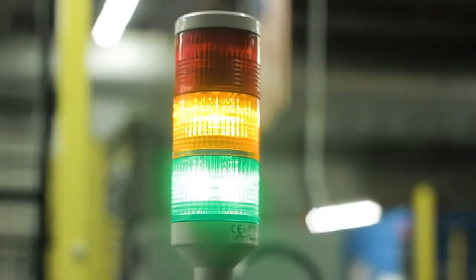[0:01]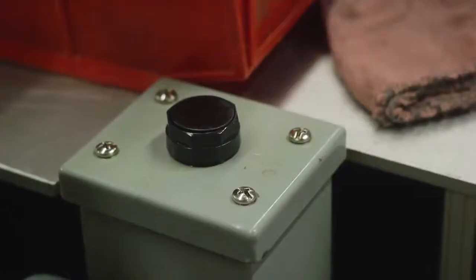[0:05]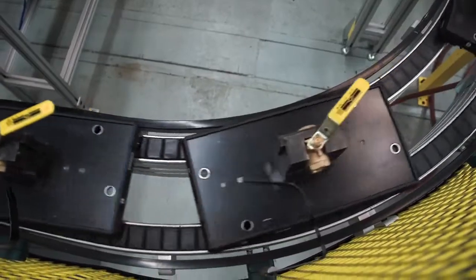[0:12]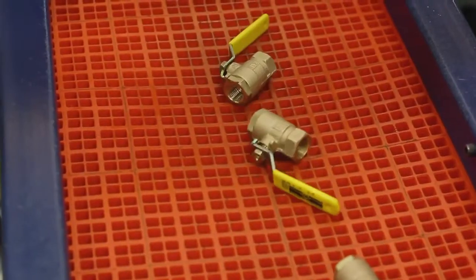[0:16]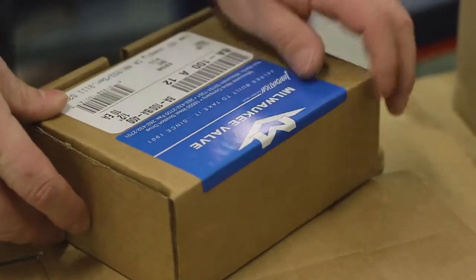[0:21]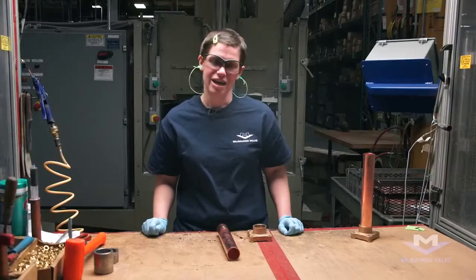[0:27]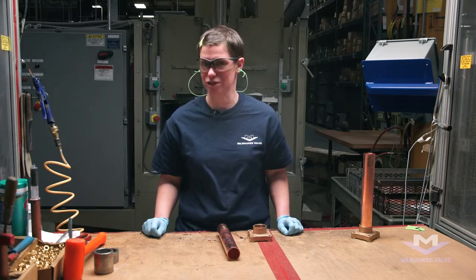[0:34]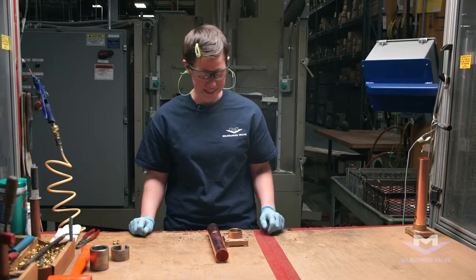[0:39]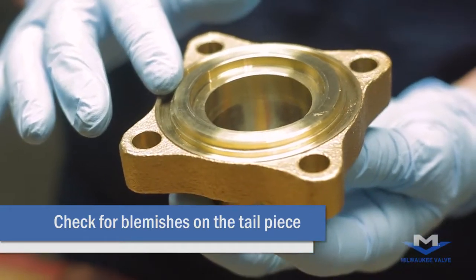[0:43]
Process in preparation for the clean room application. Step one in the brazing process is we check our tailpiece. We check to make sure that it's free of blemishes and or casting surface issues.
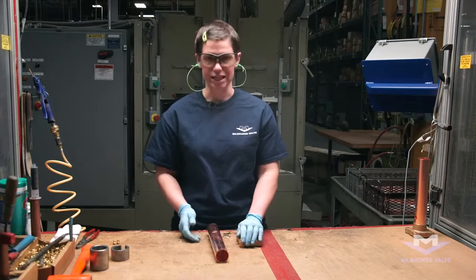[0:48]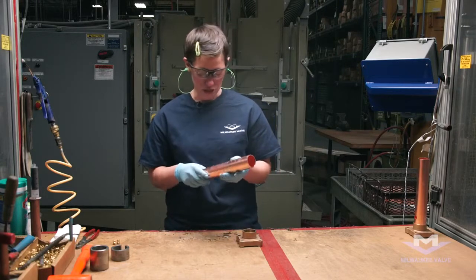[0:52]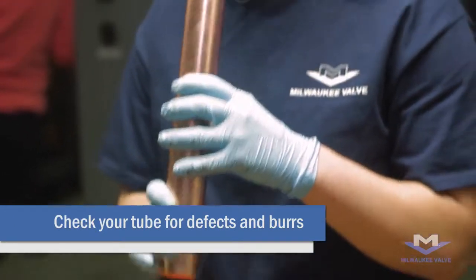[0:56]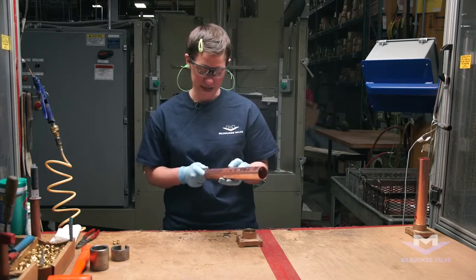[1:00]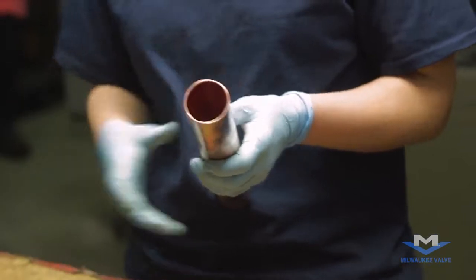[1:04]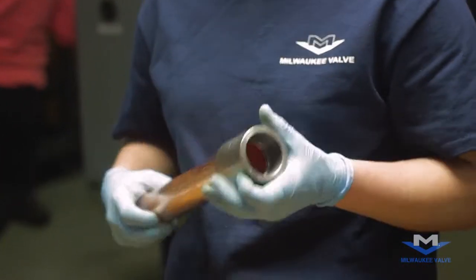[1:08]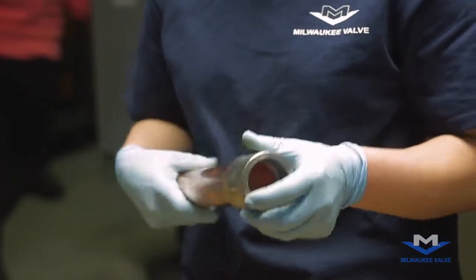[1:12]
After we deem that the tailpiece is acceptable, we move on to our tube. We check our tube over to make sure it is free of defect. We also check for burrs. If there is a burr, we remove it with our round file, especially where there is a port. Along with this process, we also gauge our tube to make sure that it meets our specs and that we can continue in the production process with it.
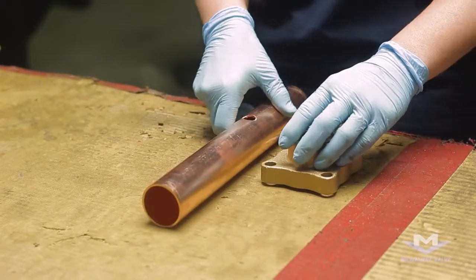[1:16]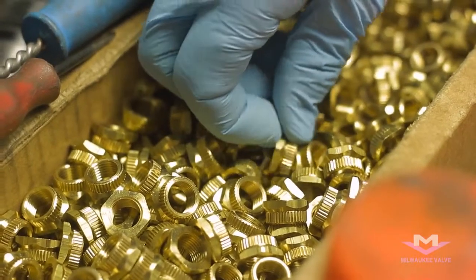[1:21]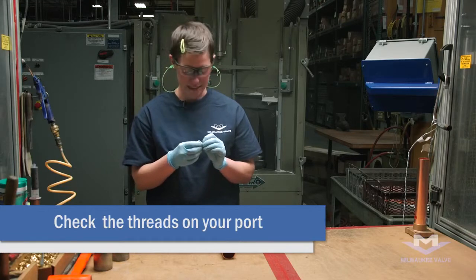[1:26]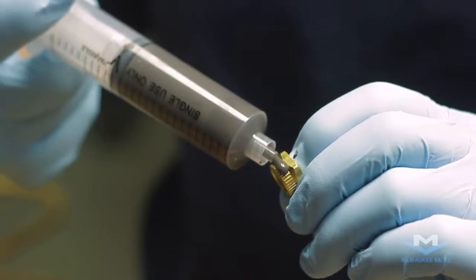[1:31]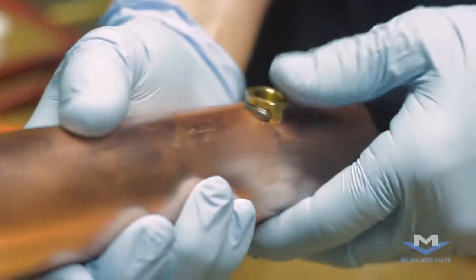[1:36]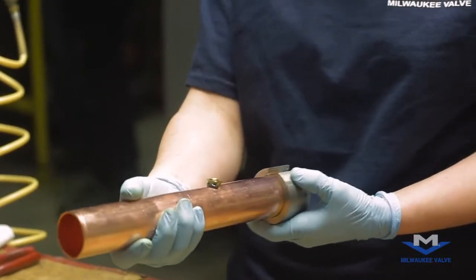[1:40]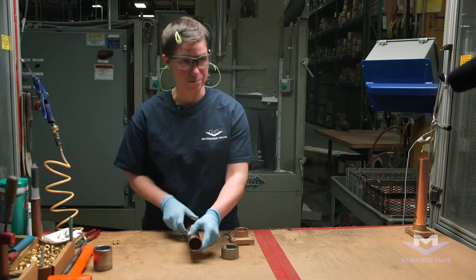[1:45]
After your tube is free of burrs and you have deemed the tailpiece acceptable, we do apply the port application. With the port, we check that the threads are acceptable and that they are not damaged. We take our brazing paste, apply it to the outer skirt of the threads, put it in the tube, make sure that the port is properly aligned, and then we can permanently affix the port to the tube.
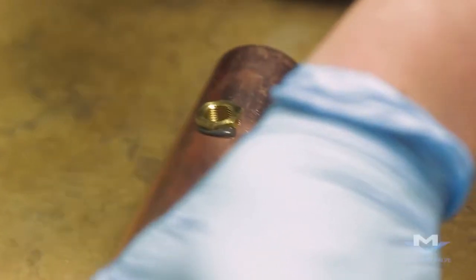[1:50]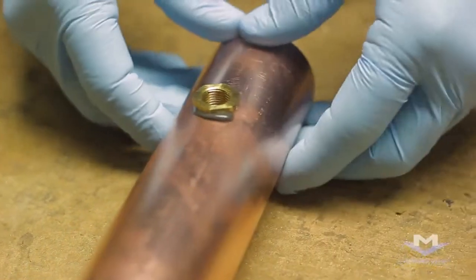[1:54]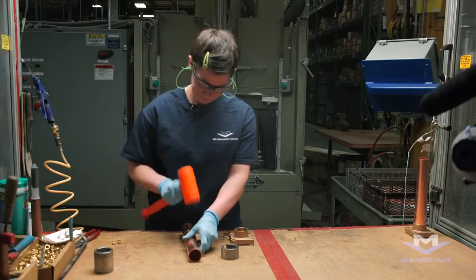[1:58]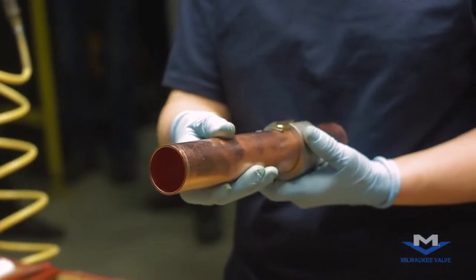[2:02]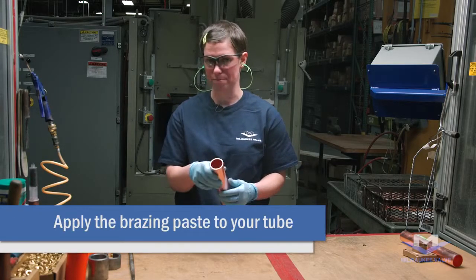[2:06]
We give it a few taps to make sure that the port is secured in the body and that the stem of the port is inside the tube. And also check for realignment at that time. After you've applied the port and you've checked for alignment, now we apply the paste to the tube.
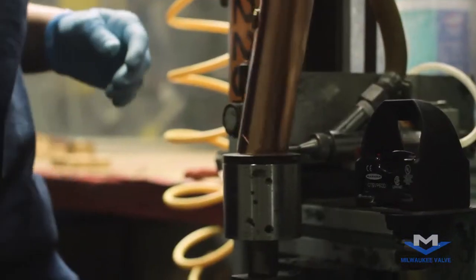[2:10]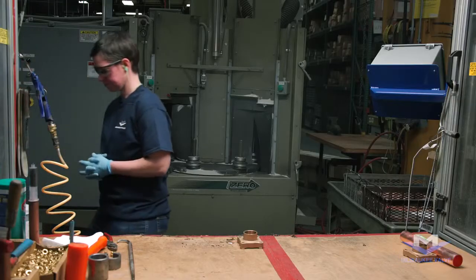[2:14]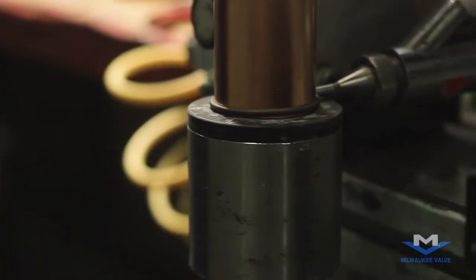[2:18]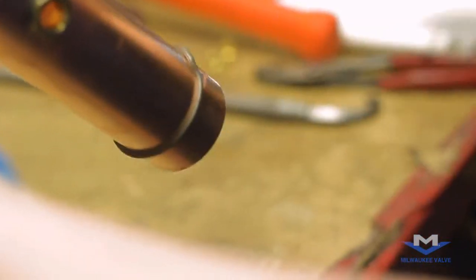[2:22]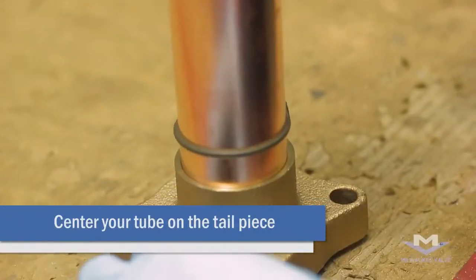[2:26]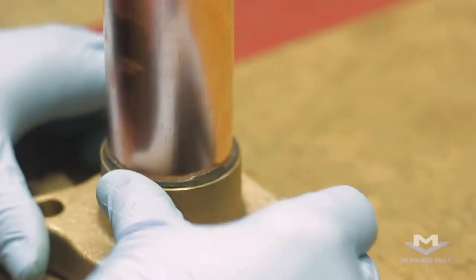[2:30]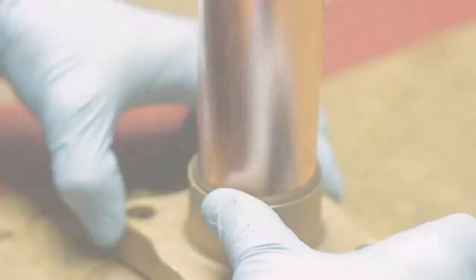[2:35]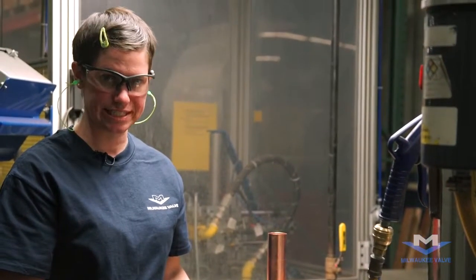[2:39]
To close the circle before applying to the tube, we use the tip of our fingertip. We again check for alignment to make sure that's directly in the center of the tailpiece, and we wipe off the extra. With the brazing paste affixed, we are ready to put it into our brazing station.
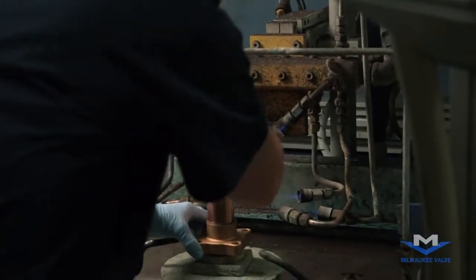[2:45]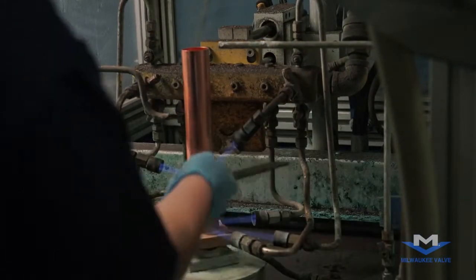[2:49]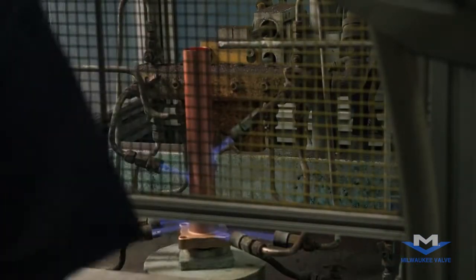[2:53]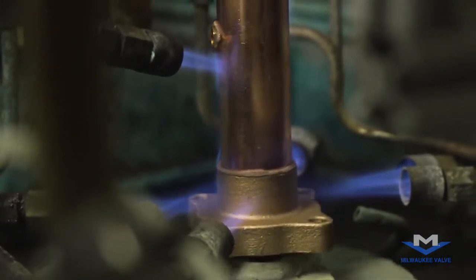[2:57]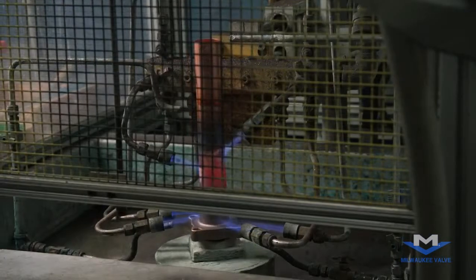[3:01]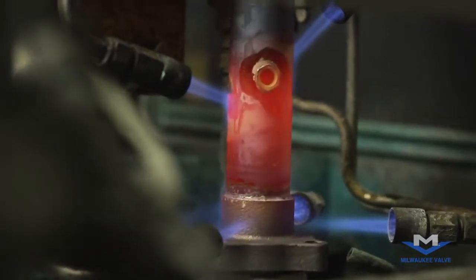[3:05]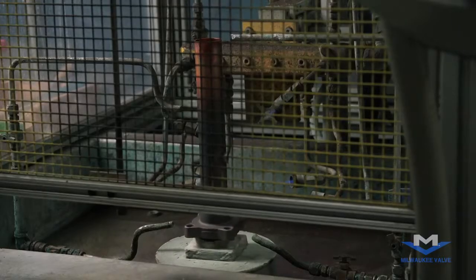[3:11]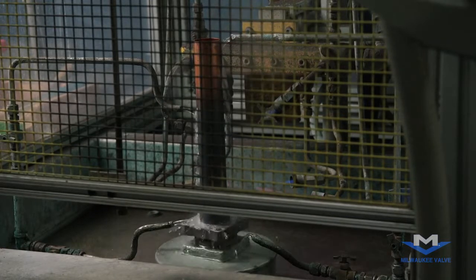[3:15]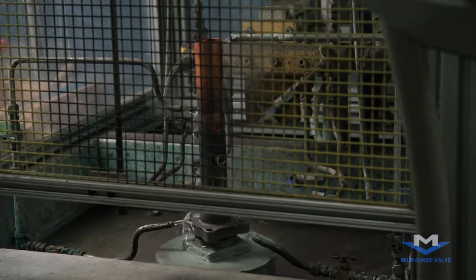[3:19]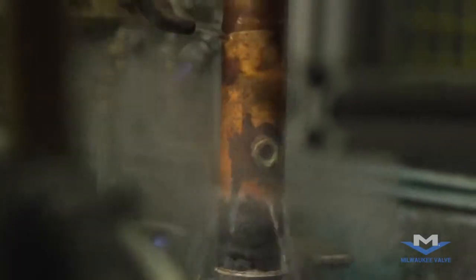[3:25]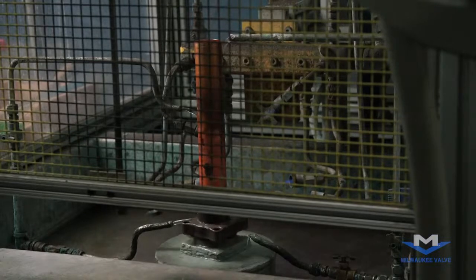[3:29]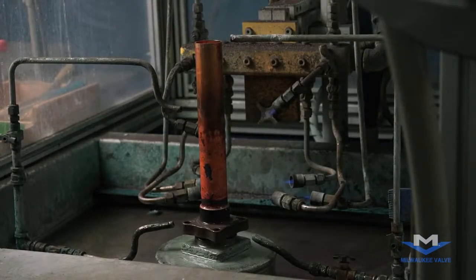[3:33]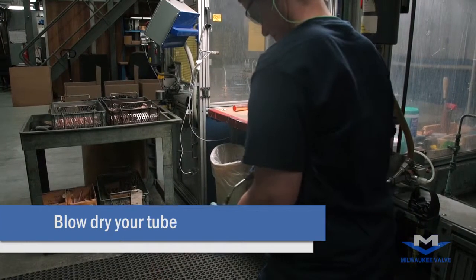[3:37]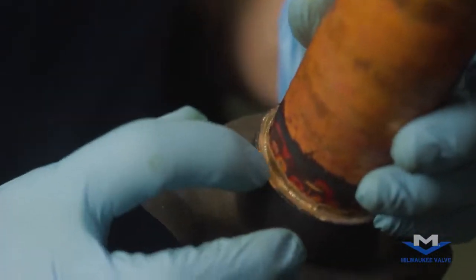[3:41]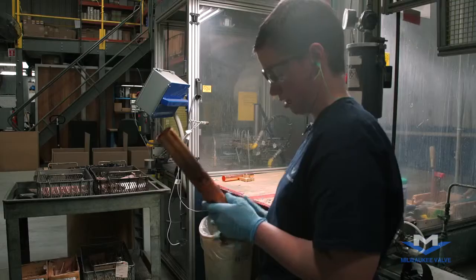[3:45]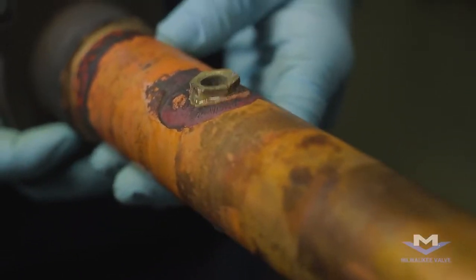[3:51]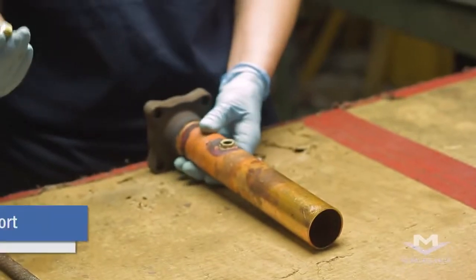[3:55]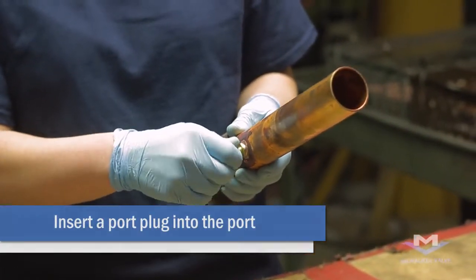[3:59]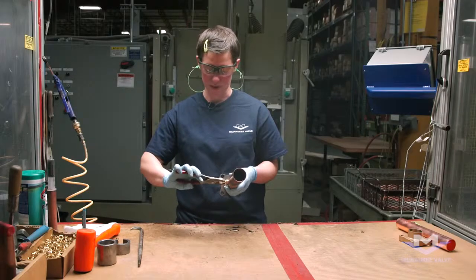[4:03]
After blowing the tube dry, we check for complete coverage and that there aren't holes in the brazing paste that we applied earlier. And we also look at our port to make sure that there aren't holes in our port. Now that the tube is dry, the next process is to protect the port with a port plug. This protects the tiny threads inside the port before you put it in the blaster.
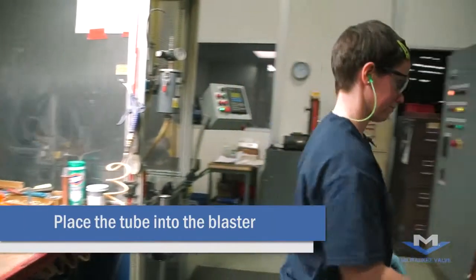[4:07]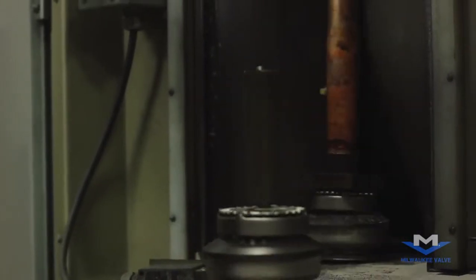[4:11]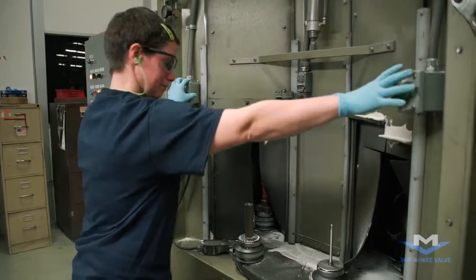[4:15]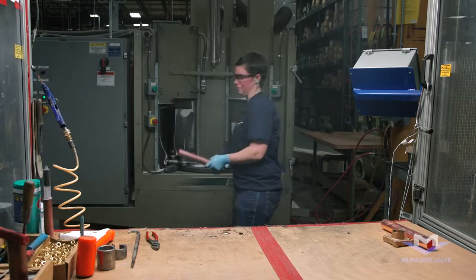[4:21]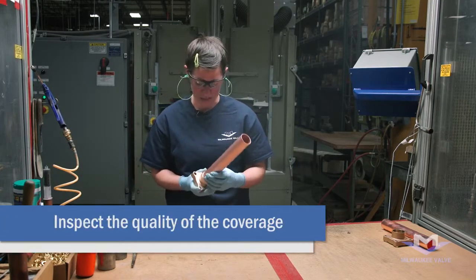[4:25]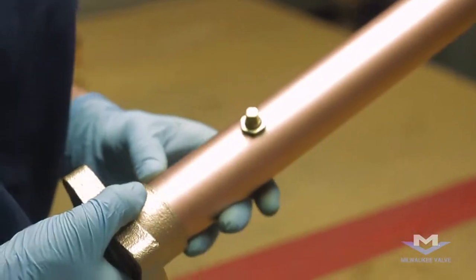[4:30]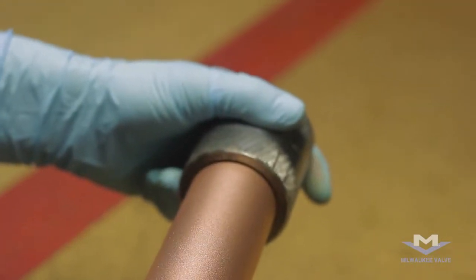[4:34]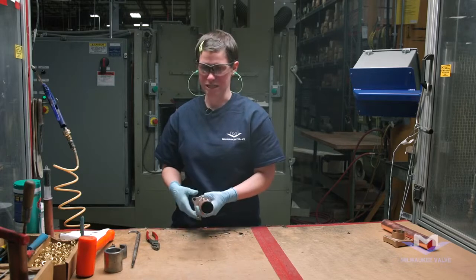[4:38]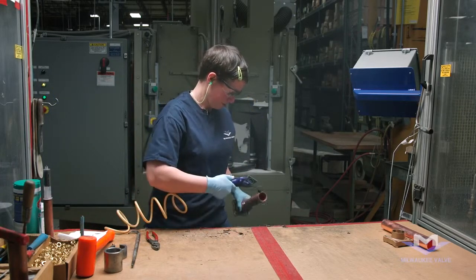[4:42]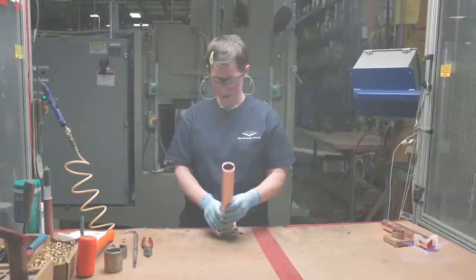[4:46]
Once we remove the tailpiece, we take it back over to the table. We inspect for the quality of the coverage. And we also gauge the tailpiece one last time to make sure that it retained its roundness and that it retained its size. At this point, we give it one blow with the air hose to remove extra blasting material. And now you're ready for the clean room application.
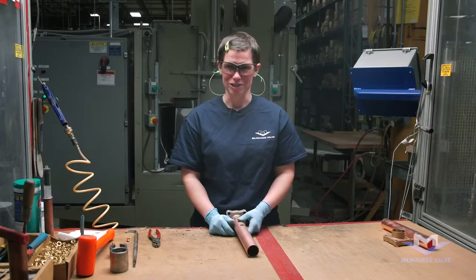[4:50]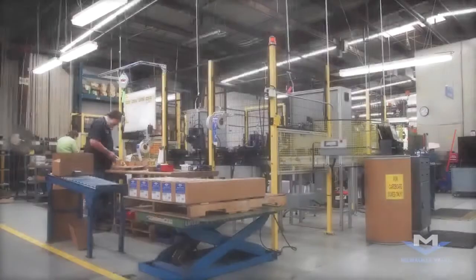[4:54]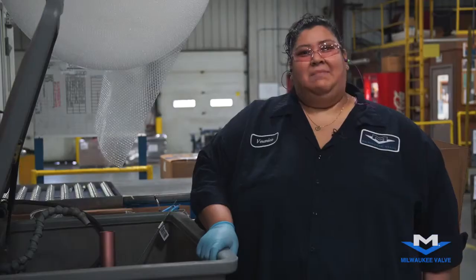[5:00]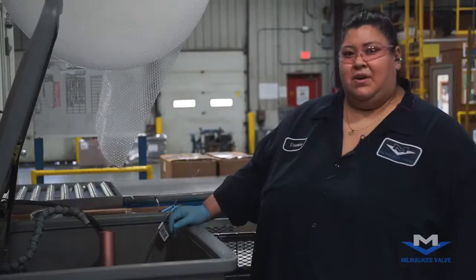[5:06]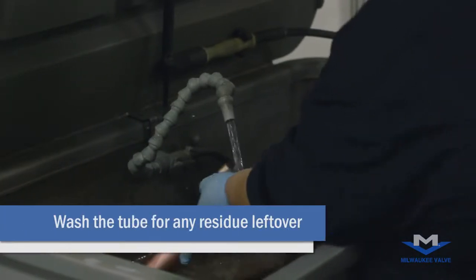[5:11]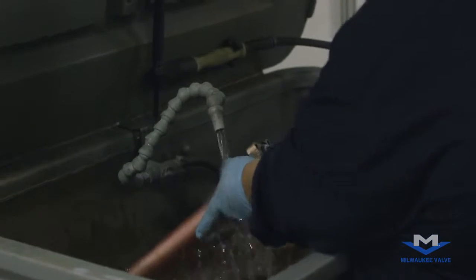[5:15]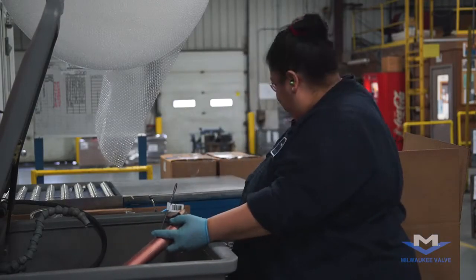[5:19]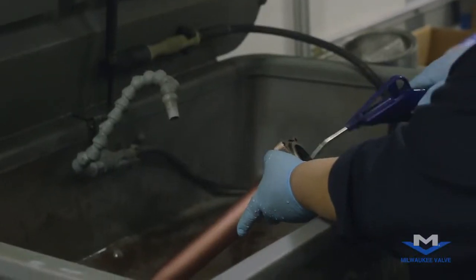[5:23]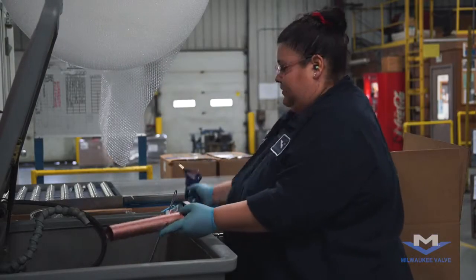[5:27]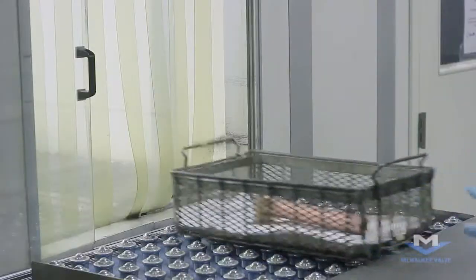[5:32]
I'm here to show you the process for the clean room. Before we start, we wash the tubes for any residue from the blasting and brazing. After you do the brushing, you blow it off. You put it in the basket and take it to the clean room through the window.
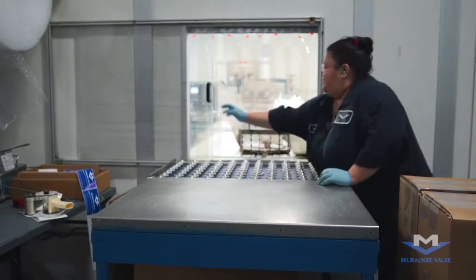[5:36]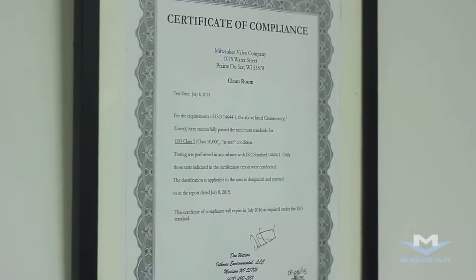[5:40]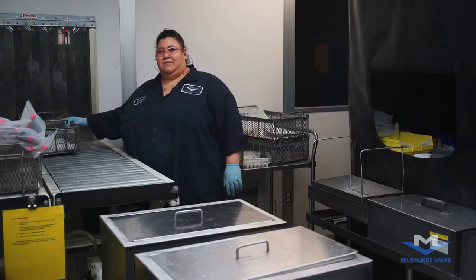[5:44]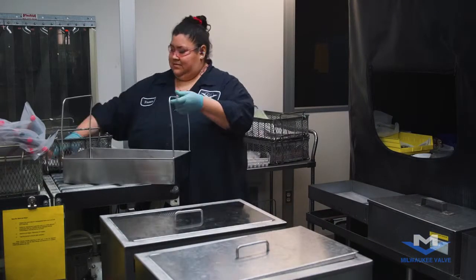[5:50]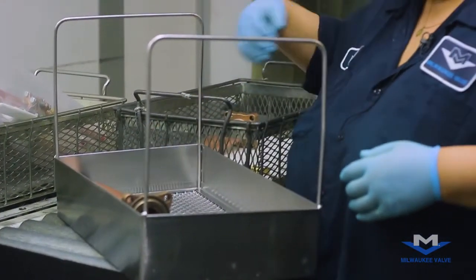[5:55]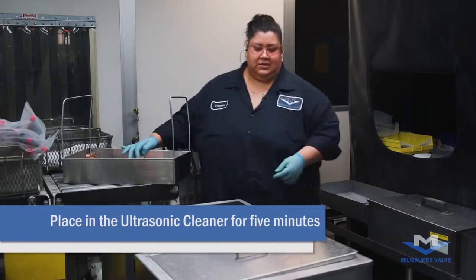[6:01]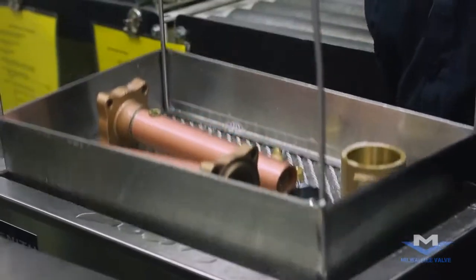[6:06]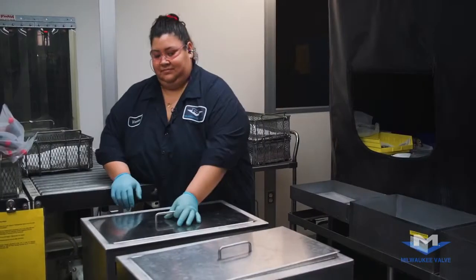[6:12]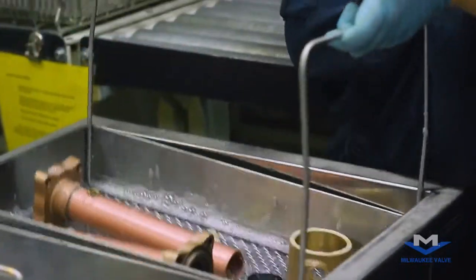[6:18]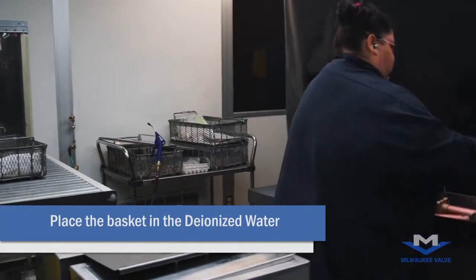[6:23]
Once it's in the clean room, the first thing to do is put it in a basket: the body, the ball, the tubes, the stem and the gland, and we put it in the ultrasonic cleaner. And this is going to be for 5 minutes. Once the 5 minutes are done, you take it out, drain all the water out, and put it in the deionized water.
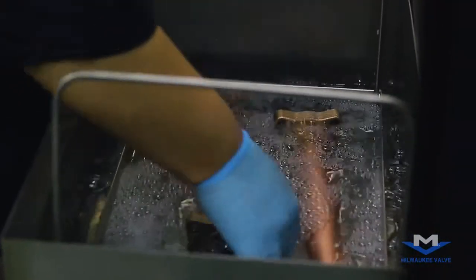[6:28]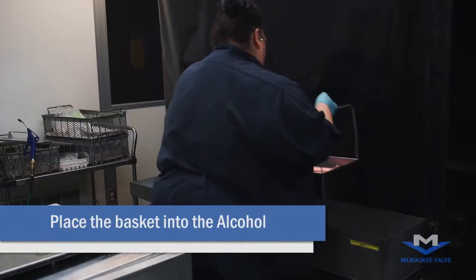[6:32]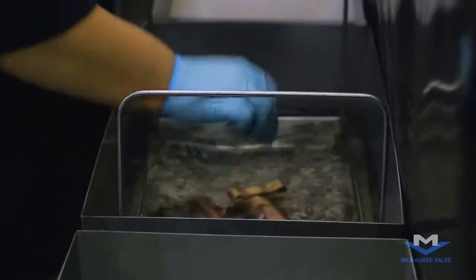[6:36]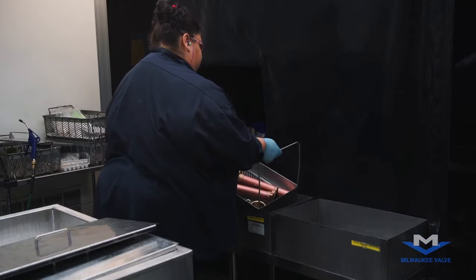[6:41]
Drain the water, then put it into the alcohol. Then when it's out of the alcohol, we blow it out.
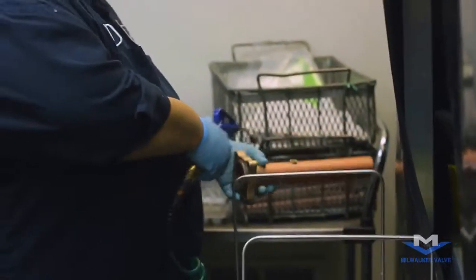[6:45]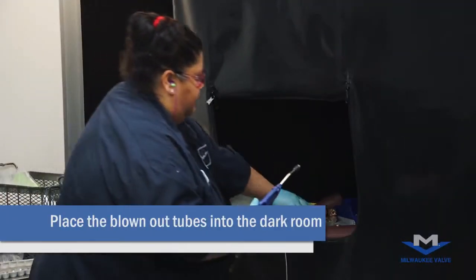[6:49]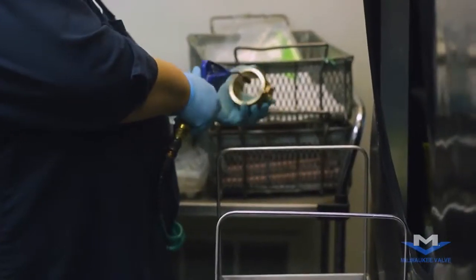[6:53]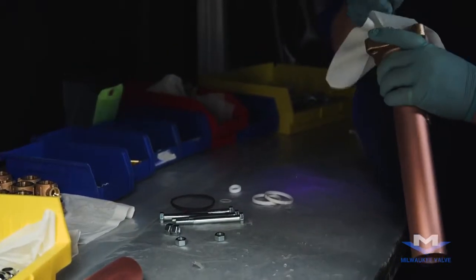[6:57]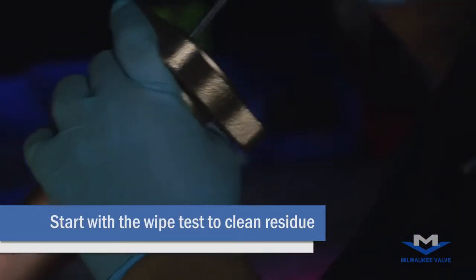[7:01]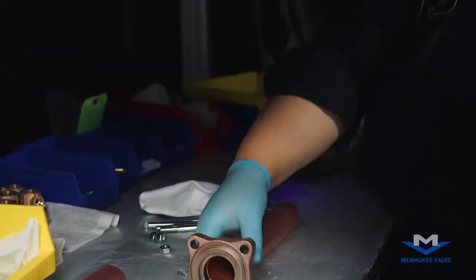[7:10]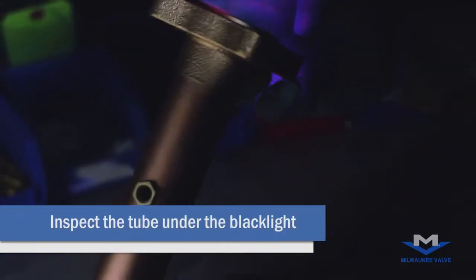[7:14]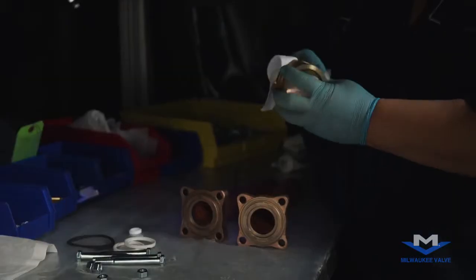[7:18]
The first thing you're doing here in the black light room is the wipe test, which is inside the tube. Make sure there's no residue that was left. Take it out. Then you take it under the black light, watching for any debris on there. Then you do the wipe test on the body, and then you do it under the black light.
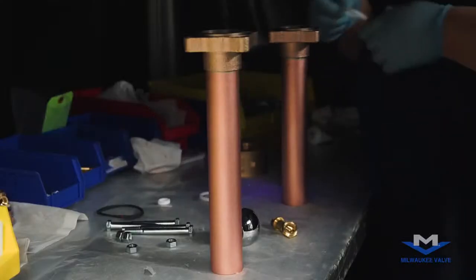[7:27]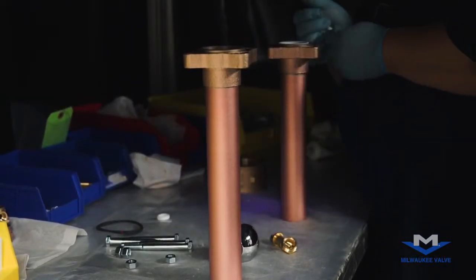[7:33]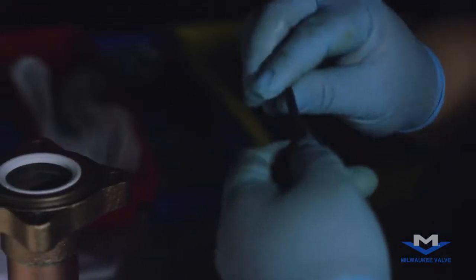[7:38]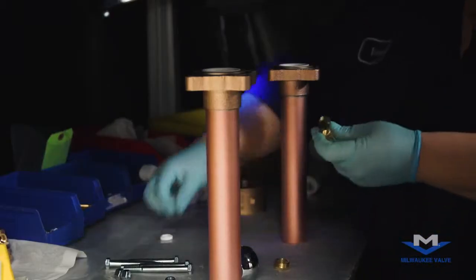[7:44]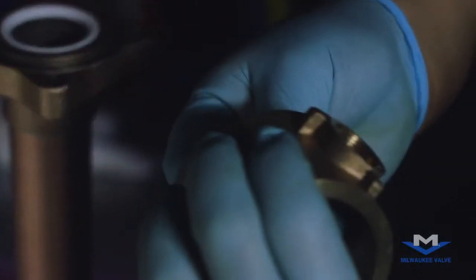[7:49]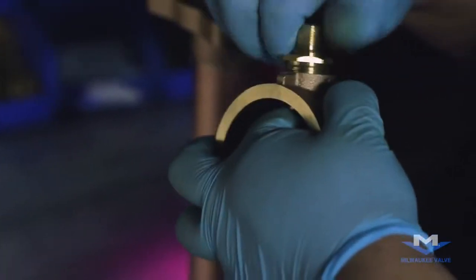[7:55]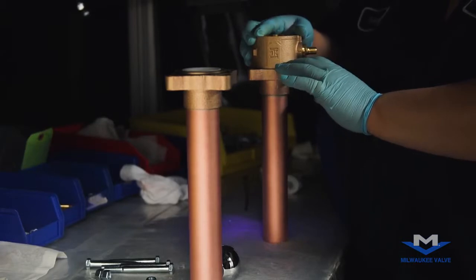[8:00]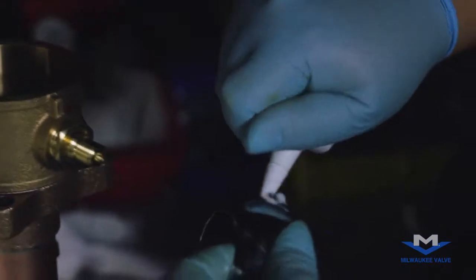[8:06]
And here are the seals. You put a little bit of Krytox on the O-rings so they stay on the tailpieces. There's the washer and the stem. They go into the body. You put the packing and the gland in there. Then you put the body on there and then the ball. You put a little bit of Krytox on the ball.
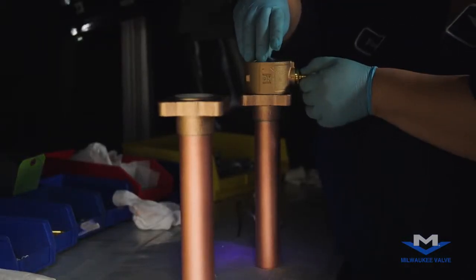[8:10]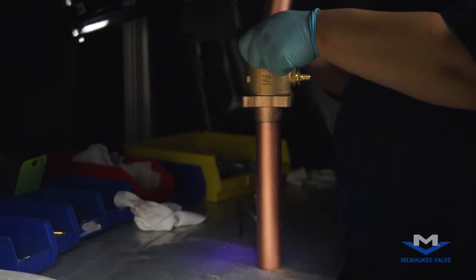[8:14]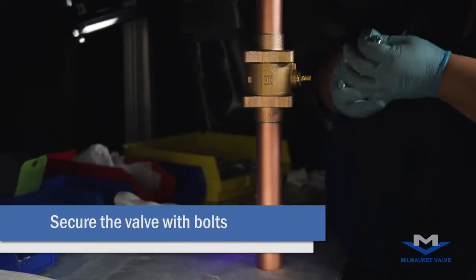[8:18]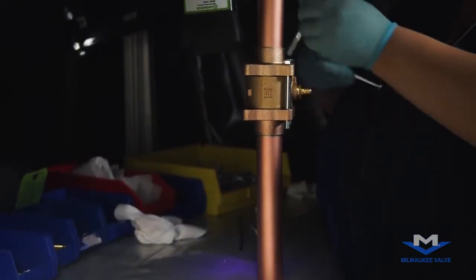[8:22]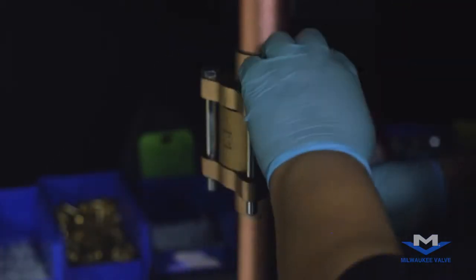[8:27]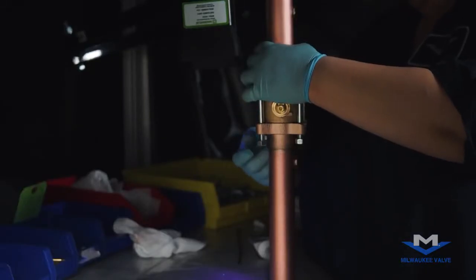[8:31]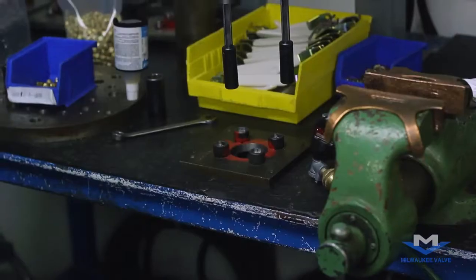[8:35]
And you put the other tube on the top. And then you're ready to put the bolts on there. It's 4 bolts, and then the nuts. Now it's ready to be torqued, the gland, the handle.
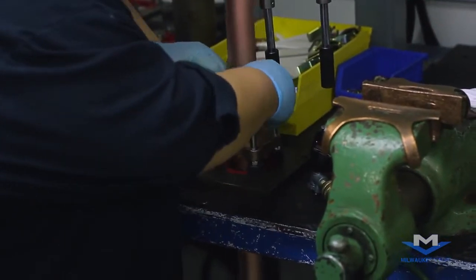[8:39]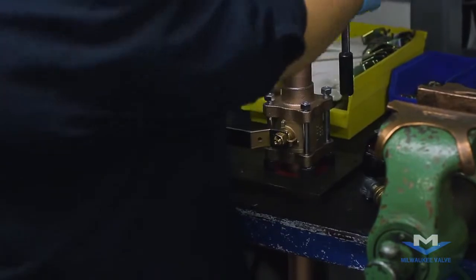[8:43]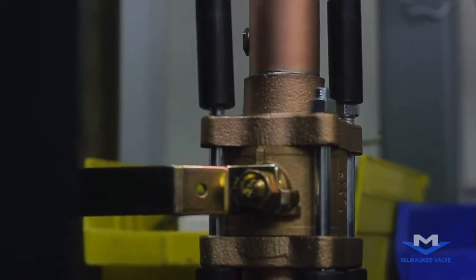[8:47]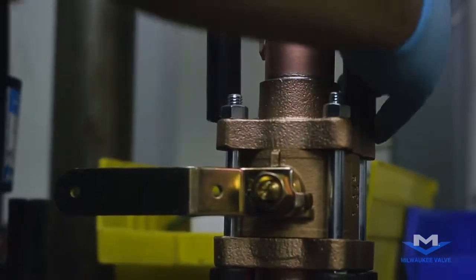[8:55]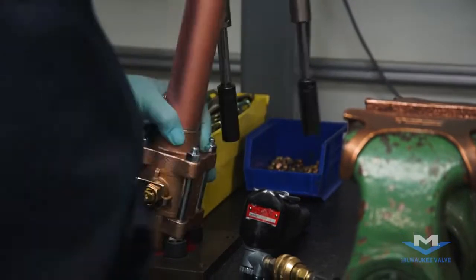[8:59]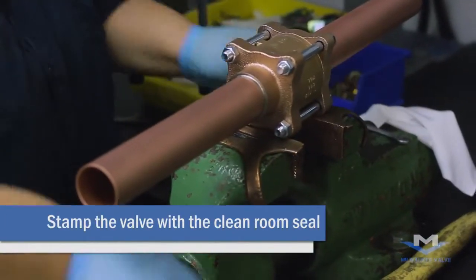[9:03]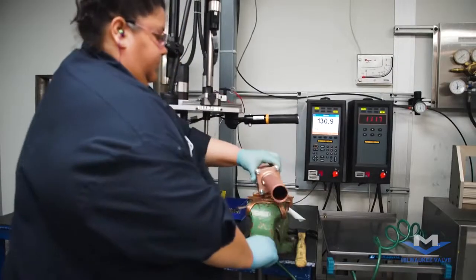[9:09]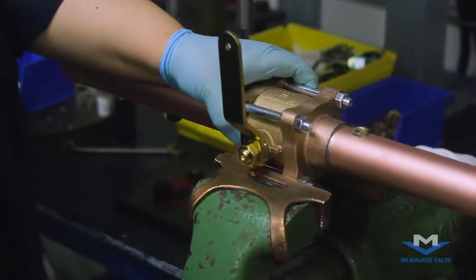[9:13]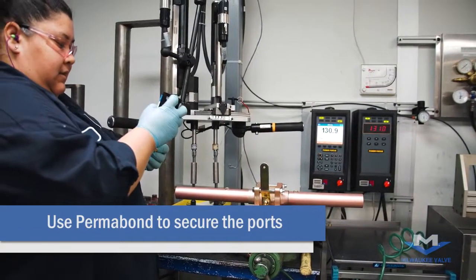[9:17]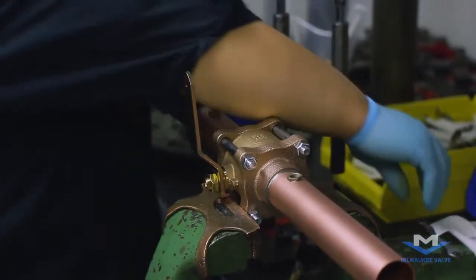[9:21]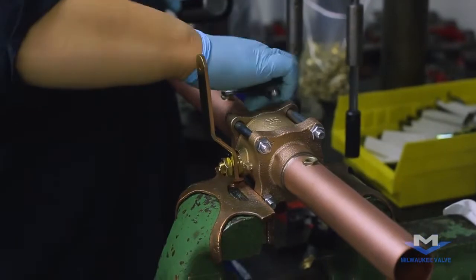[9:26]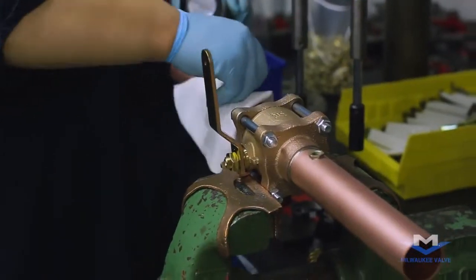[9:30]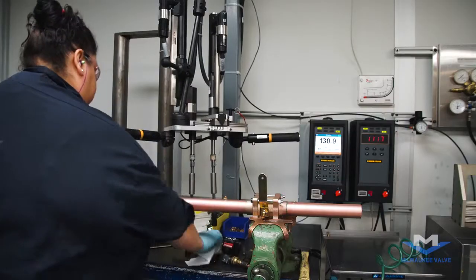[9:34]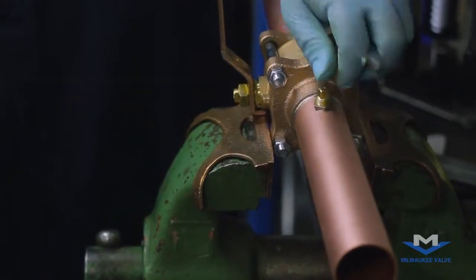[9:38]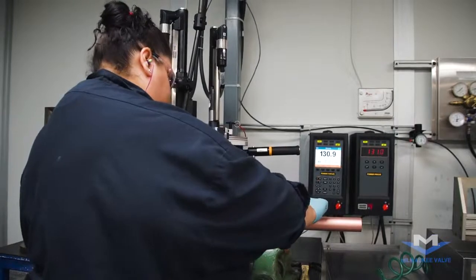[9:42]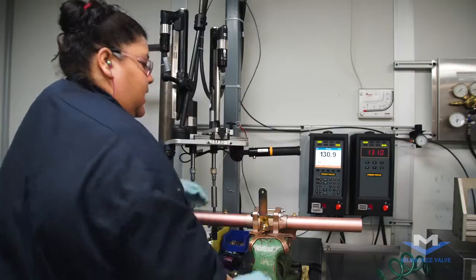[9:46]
Then you take it out of here. And you stamp it, which says the clean room. And you're going to put the plugs on the ports. And you put some Permabond on the ports. Then you torque it. And you wipe off any that didn't go down. And you do the other one. Now it's ready to be tested.
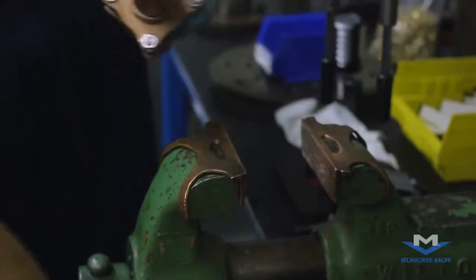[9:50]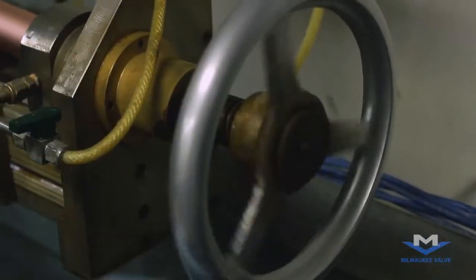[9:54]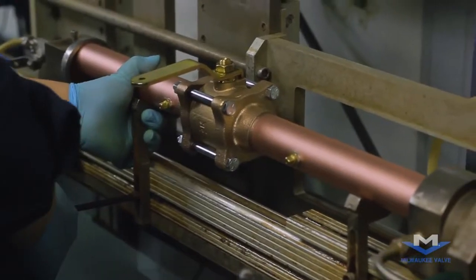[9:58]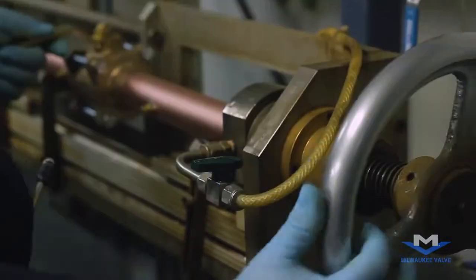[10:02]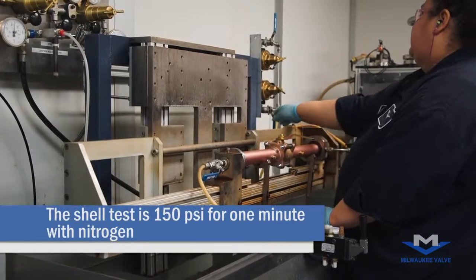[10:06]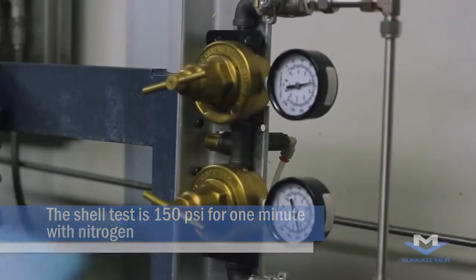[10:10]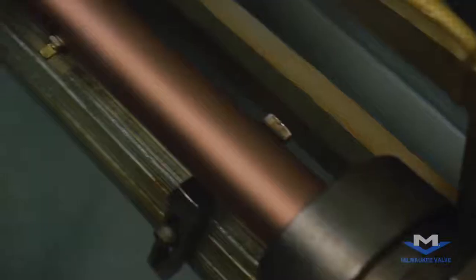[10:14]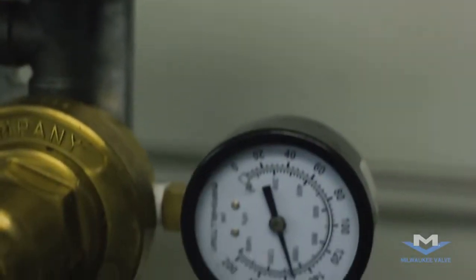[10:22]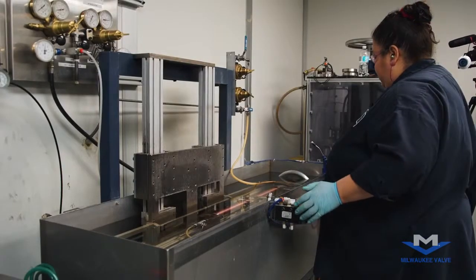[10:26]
Okay, and you clamp it together. And I'm going to do the shell test, so you have to open it. It's going to be at 150 for 1 minute. And you watch for any bubbles around the ports, around the gland, on the body. Once the minute is over, you lift it up.
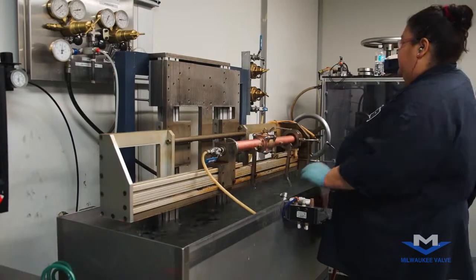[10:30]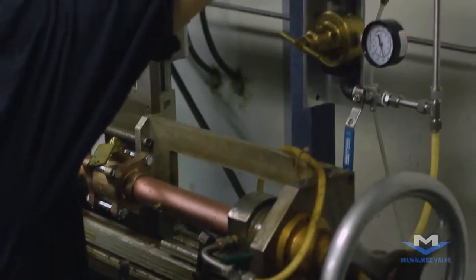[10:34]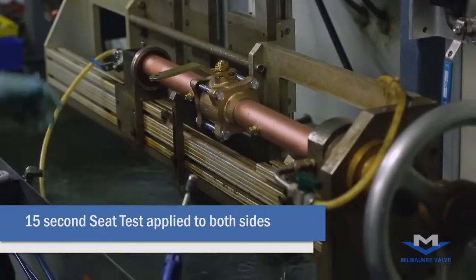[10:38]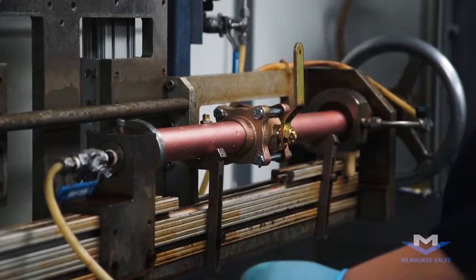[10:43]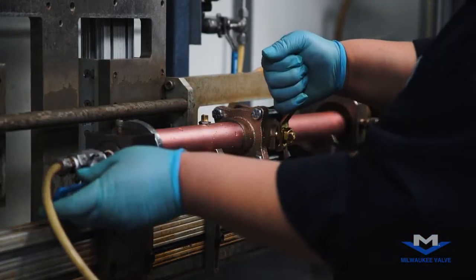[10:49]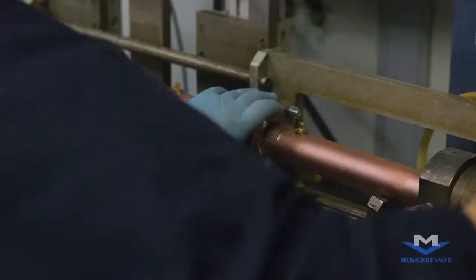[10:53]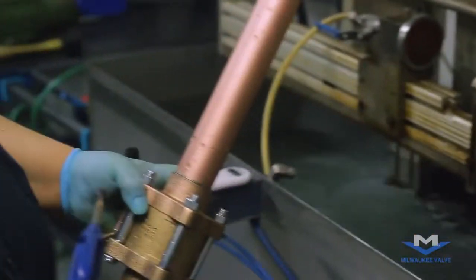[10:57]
You close the gauge that's for the shell test and you do the seat test. So now you're going to be waiting for any bubbles. Okay, now the 15 seconds are over. So the test is done. So you take it out. You're going to blow it off completely so there's no water left on there.
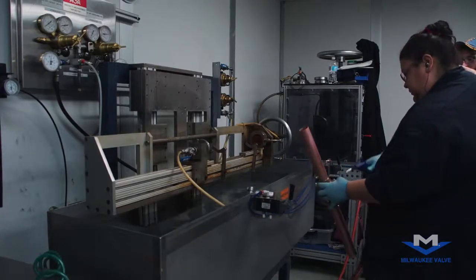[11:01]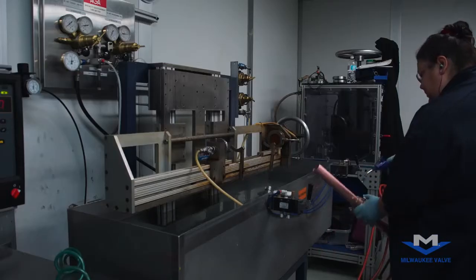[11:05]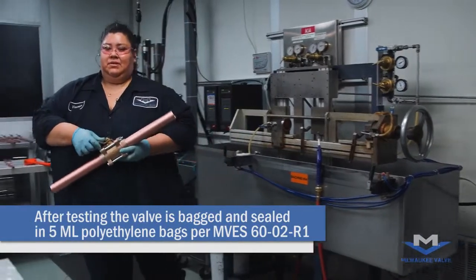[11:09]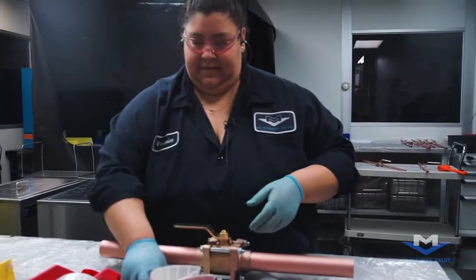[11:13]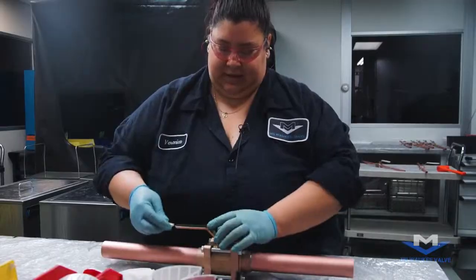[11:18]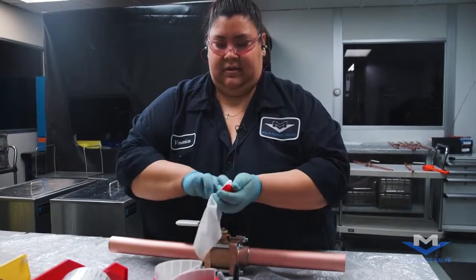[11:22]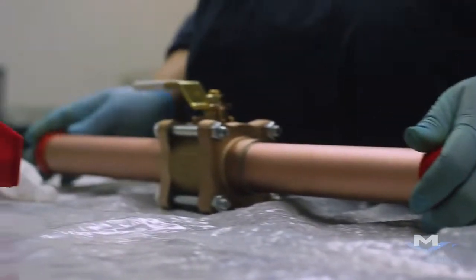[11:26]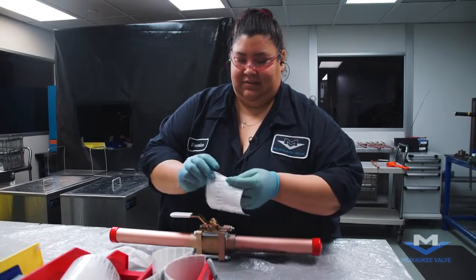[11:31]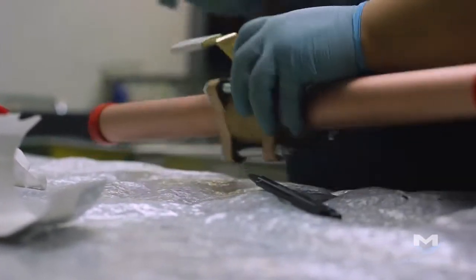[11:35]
Now that it's been tested, I'm going to take it over to the table to put the grip and caps on and bag it. You wipe the grip and put it on the handle. You also wipe clean the caps. Then you put a sticker on the handle. Then it's ready to be bagged.
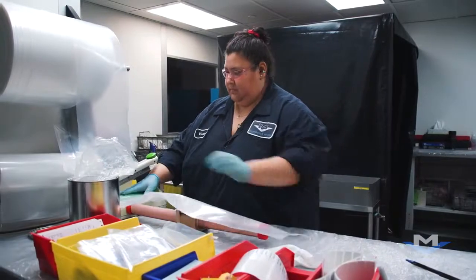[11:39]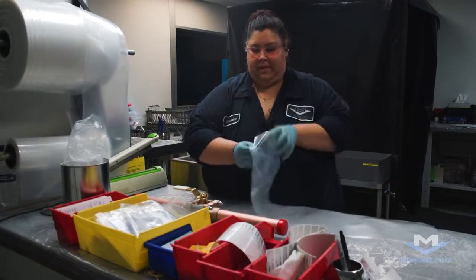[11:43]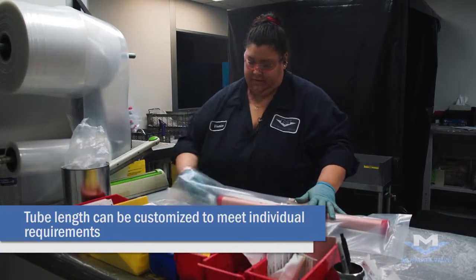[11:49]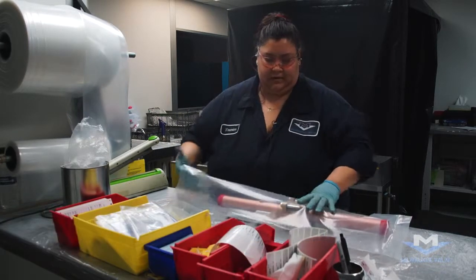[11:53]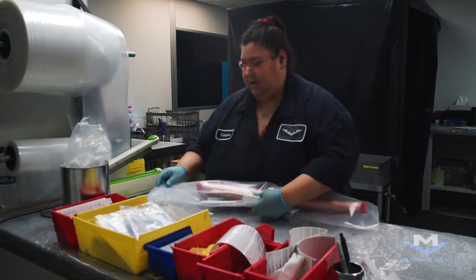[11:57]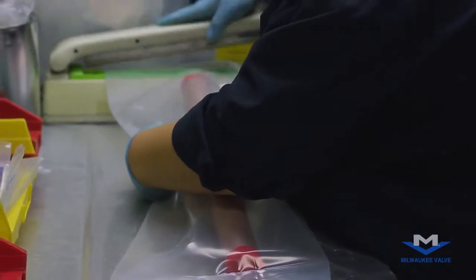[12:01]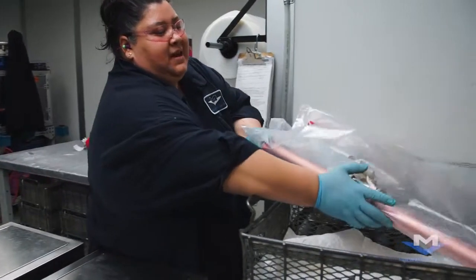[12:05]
Put it inside the bag. You put a desiccant in there and one of the instruction tags in there for oxygen clean. You take all the air out from the bag and seal it again. Now it's ready to be put in the basket to be boxed and sent out.